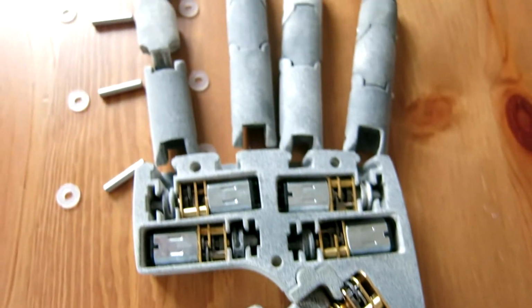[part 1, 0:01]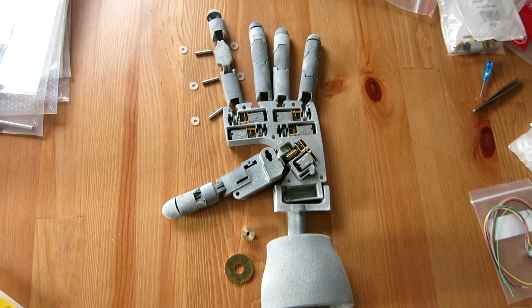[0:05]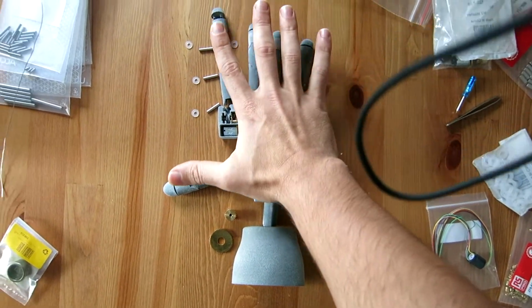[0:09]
For the past 9 months, outside of work in my free time, I've been designing a bionic hand. I've made some pretty good progress with it and wanted to share where I'm at and also give a bit of background behind this project.
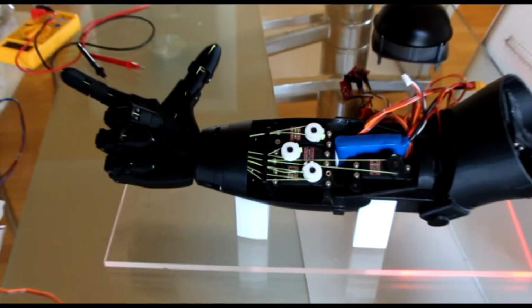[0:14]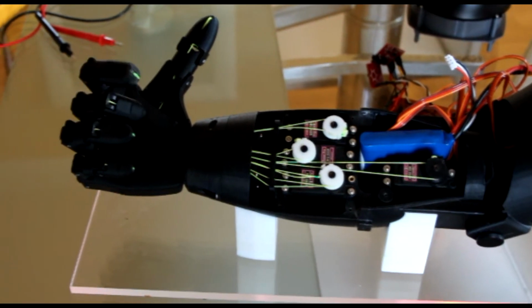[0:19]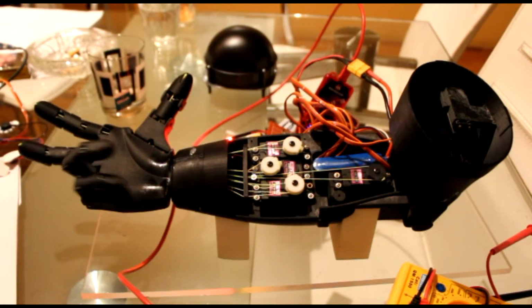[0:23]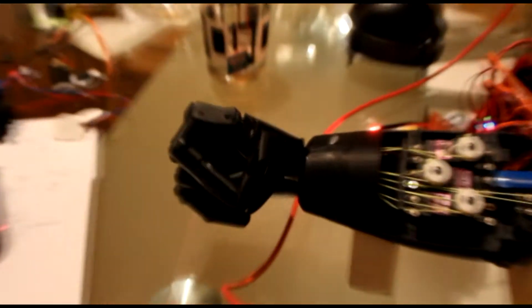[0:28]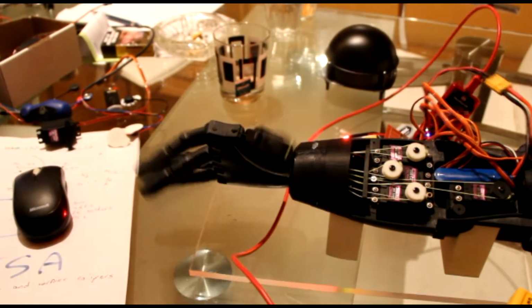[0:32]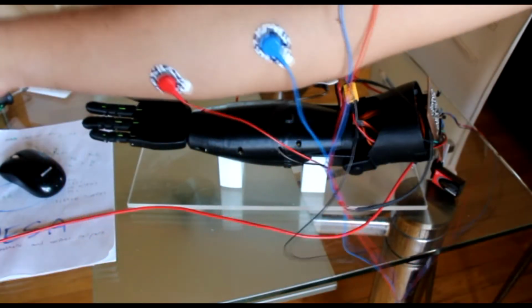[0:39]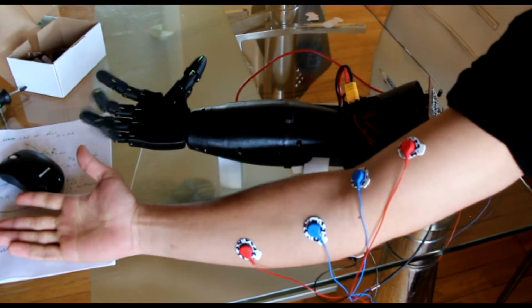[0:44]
Way back in 2014, I designed and built a 3D printed bionic hand for my final year of university. I learned a lot doing this project, especially about mechanical design. And as you can see, each finger was actuated by a motor in the forearm. The wrist could rotate and the elbow could rotate, giving a total of 7 degrees of freedom. I even used EMG sensors to use my muscles to control the movement of the bionic hand. And this is typically how an amputee may control a bionic hand they're fitted with.
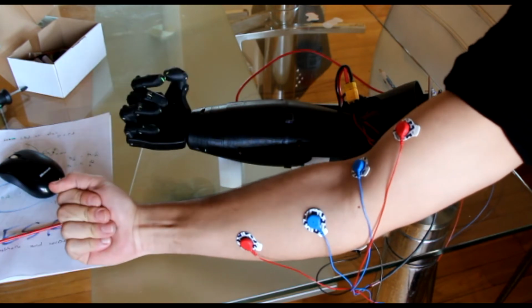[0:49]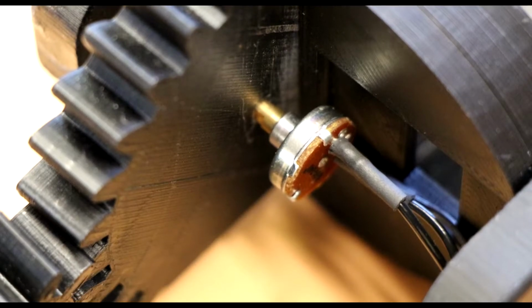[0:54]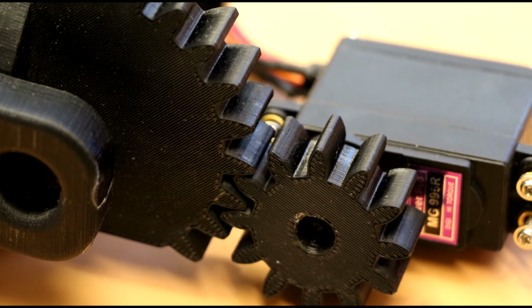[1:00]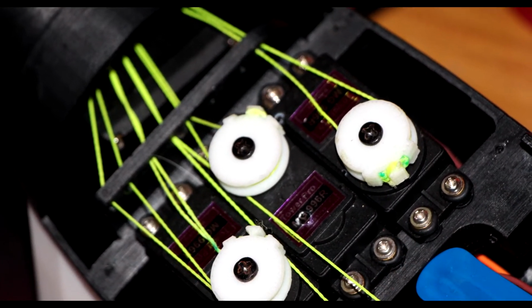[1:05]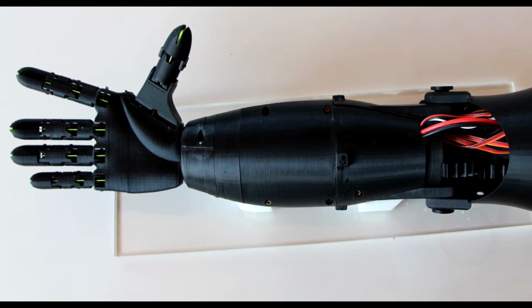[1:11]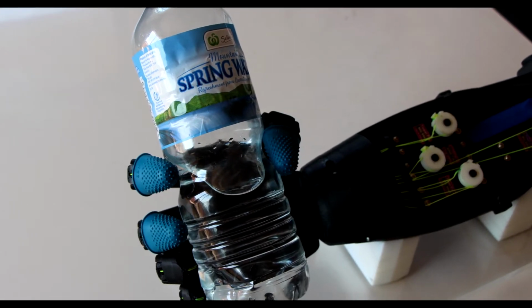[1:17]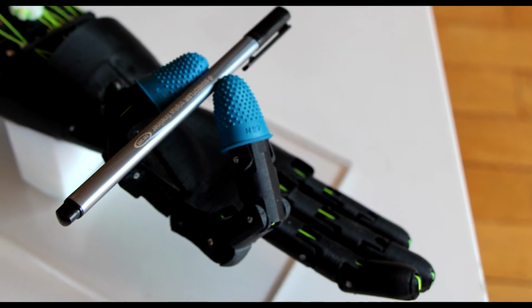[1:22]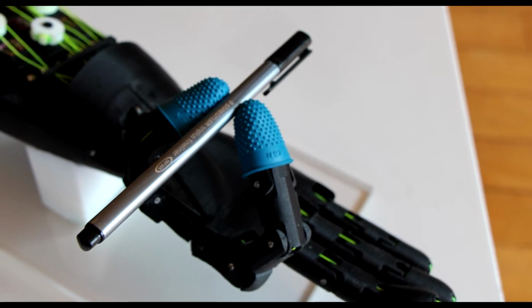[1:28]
Even though the design came out pretty reasonable, it had a few issues that prevented it from being a good bionic arm to attach to an amputee. The first one was that a lot of the components were 3D printed on an FDM printer, and because of the layering, they were quite weak, so I was fearful that an amputee would break the arm relatively easily in day-to-day life. The second issue was that the thumb only had 1 degree of freedom, so it could only open and close in one direction and didn't have much mobility. In this image here, you can see the thumb and the index finger holding a pen, but this wouldn't be possible between the thumb and the large finger or ring finger, for example.
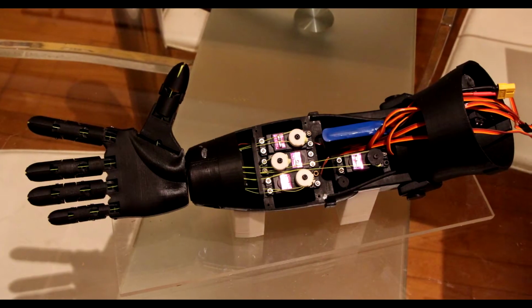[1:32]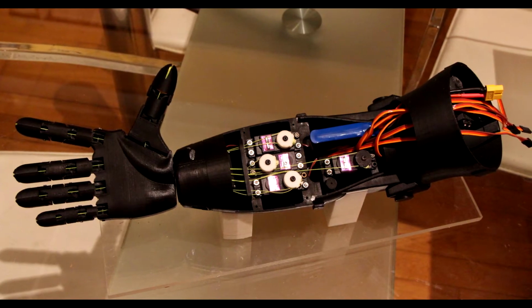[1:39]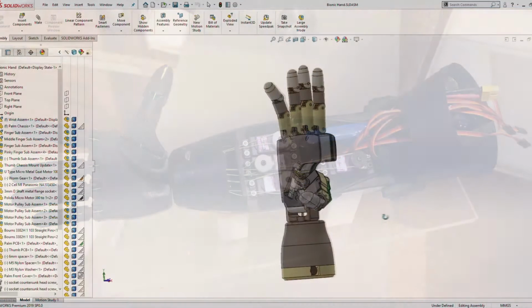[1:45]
The final issue was that the motors were housed inside the forearm, which is actually quite common for a lot of commercially available bionic arms, but it means that a person that's only lost their hand can't really make use of a design like this.
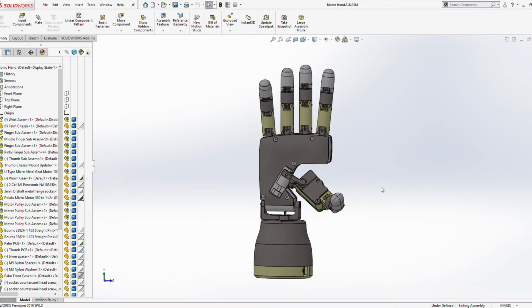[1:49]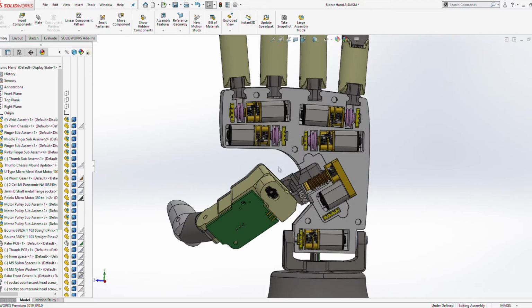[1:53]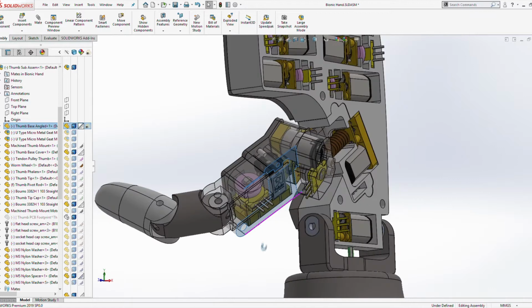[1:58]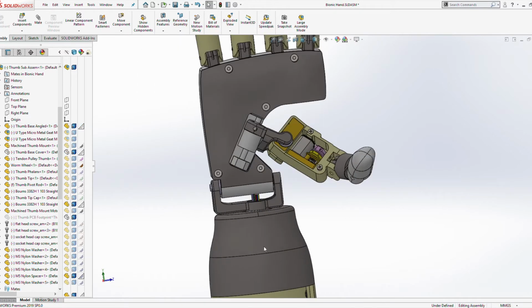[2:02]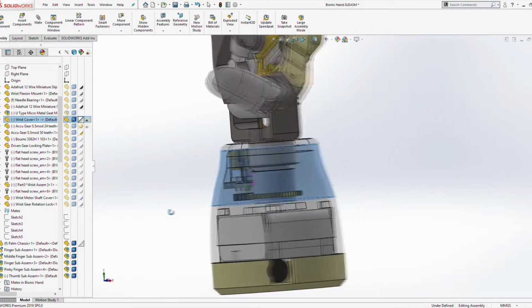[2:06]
So this is where I'm at with the design of the new bionic hand. I want it to be more durable, more compact, and also have more mobility. So I'm planning on using micro miniature motors in the palm and the thumb base. And the thumb will have 3 degrees of freedom. I'm also using a motor in the wrist, and the wrist will be able to rotate and flex.
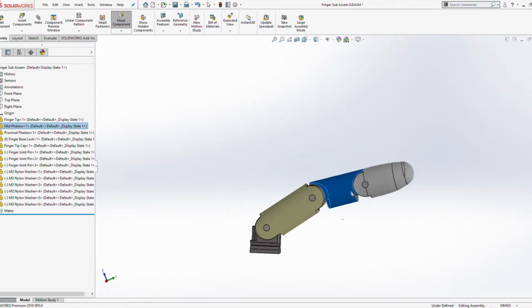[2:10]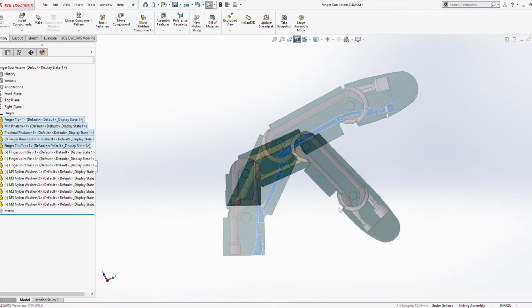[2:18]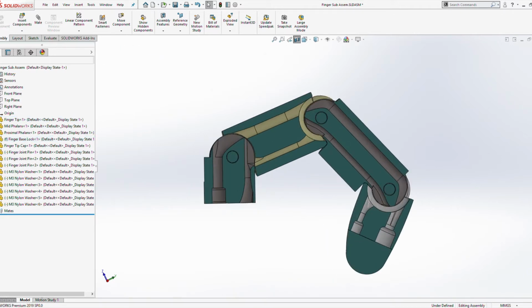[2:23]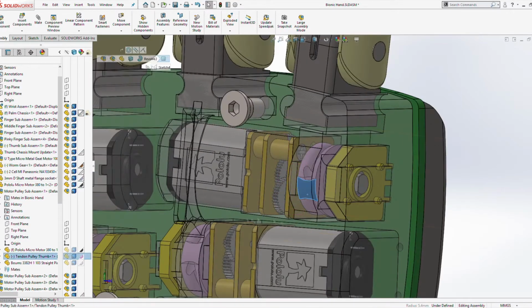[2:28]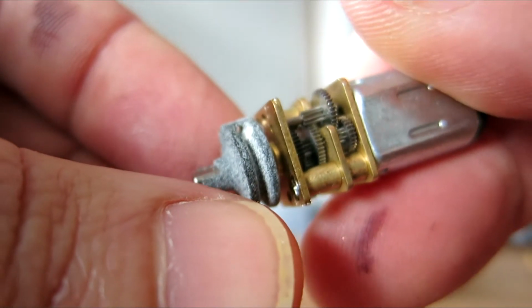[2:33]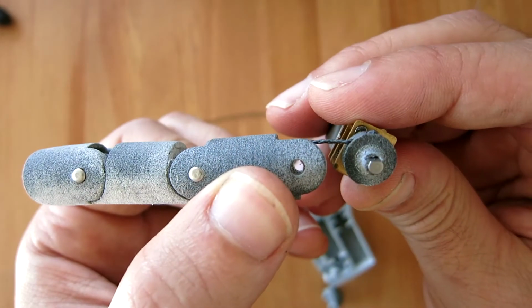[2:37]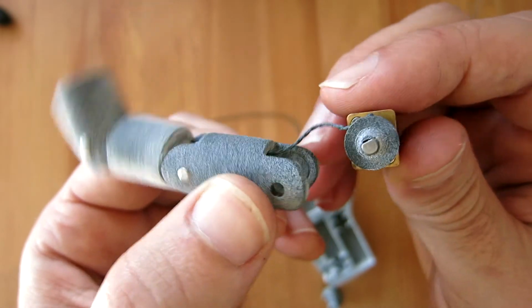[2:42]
The fingers will be 3 joint linkage systems, and I'm still going to use tendon driven systems. So I'm going to have a tendon passing through a channel inside the finger. And when a motor tensions that, it's going to close or flex the finger. And that flexion will be driven by pulleys, which will be attached to the motors in the palm. So this is one of the 3D printed pulleys I got. These are actually 3D printed on an SLS powder printer, which has many benefits over an FDM printer. But I think I'll talk about that in an upcoming video.
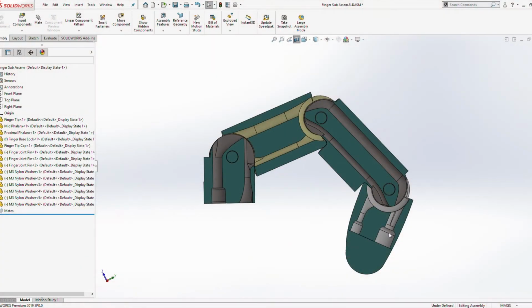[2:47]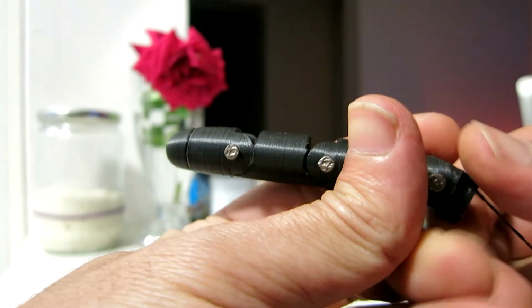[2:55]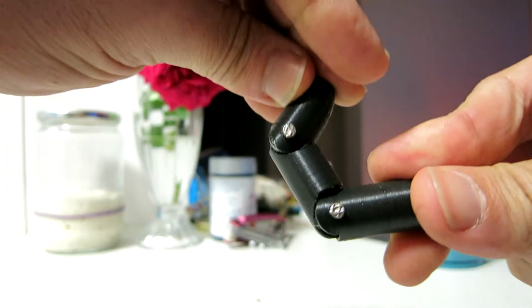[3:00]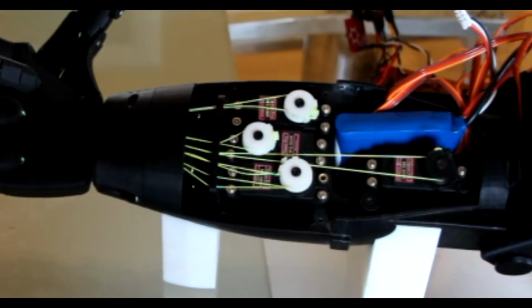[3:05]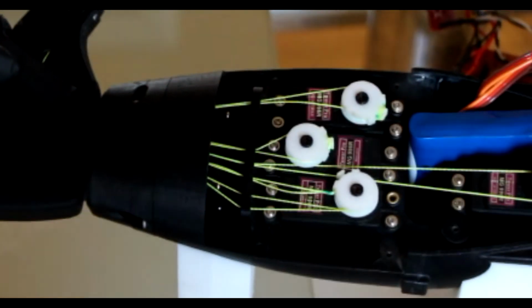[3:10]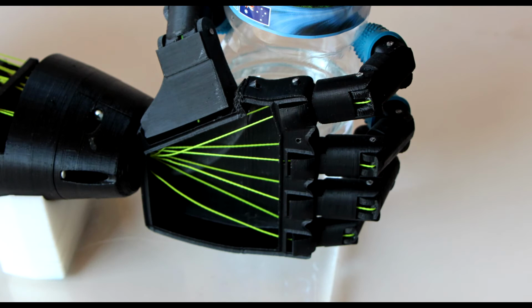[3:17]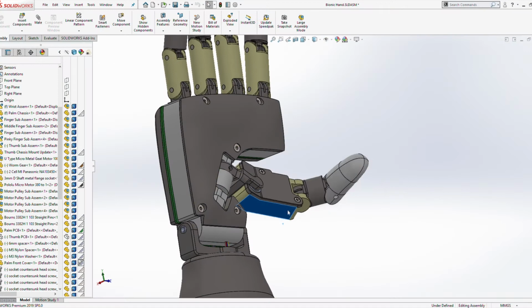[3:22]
Just as importantly, the finger will return to its extended position by an elastic in the back channel of the finger. So the motor can close the finger, and when the motor is powered off, the finger will snap back to its extended position. So I think this actually has a lot of benefits, and it's not something I did in my previous design. In the previous design, I actually had a loop, so a tendon loop. So when the finger was closed or opened, one of the tendons was being tensioned and one was being released.
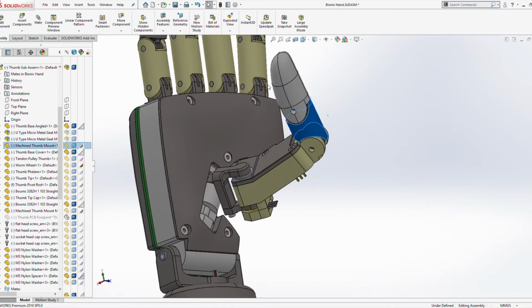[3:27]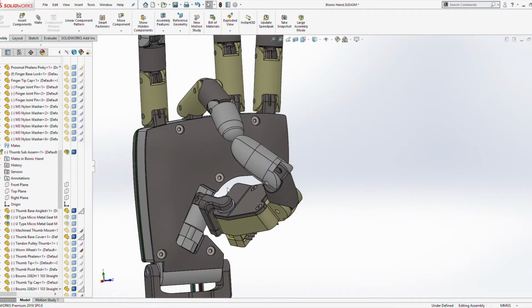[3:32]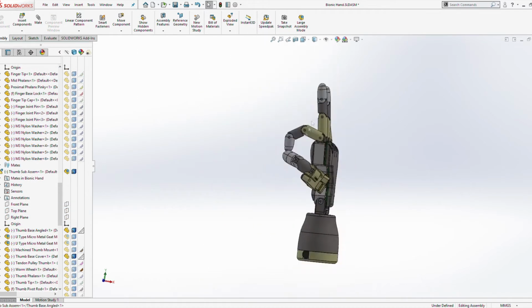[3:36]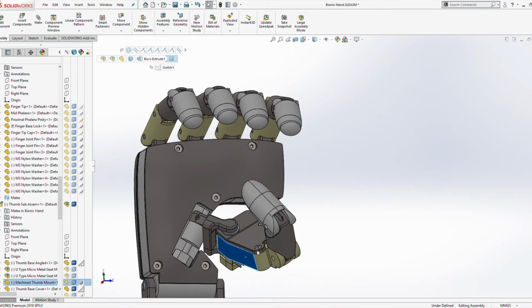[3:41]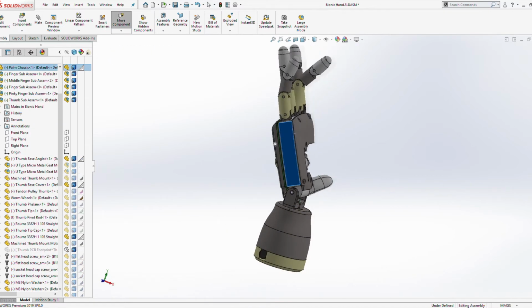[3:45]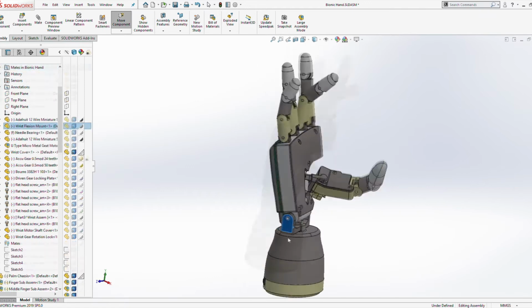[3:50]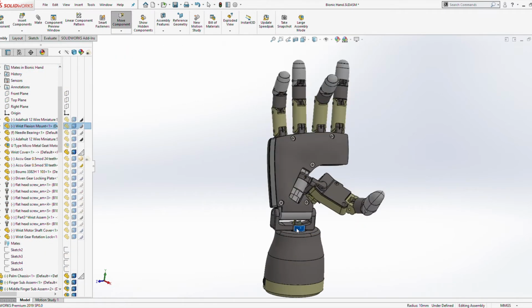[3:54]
With the thumb, I wanted to give it as much mobility as possible. At a bare minimum, I wanted the thumb to be able to maneuver so that it could touch each finger individually. This kind of mobility is super important to complete complex and fine tasks naturally. And of course, the hand will be able to completely grip some kind of round object. The wrist will also be able to flex back and forth, and it'll also be able to rotate, which isn't common in commercial prosthetic arms.
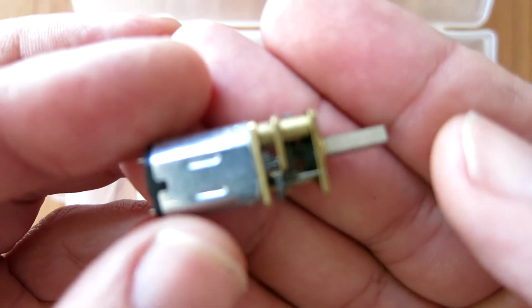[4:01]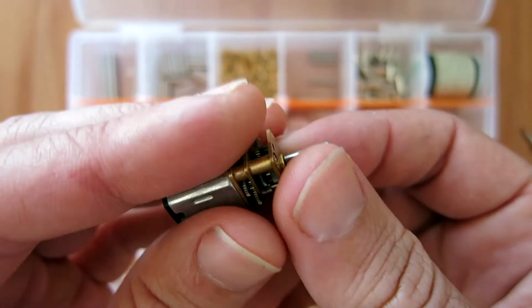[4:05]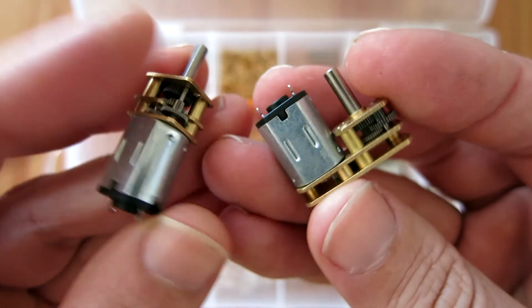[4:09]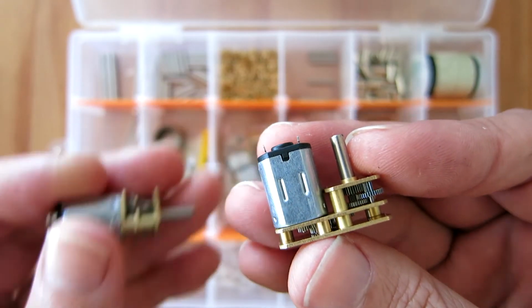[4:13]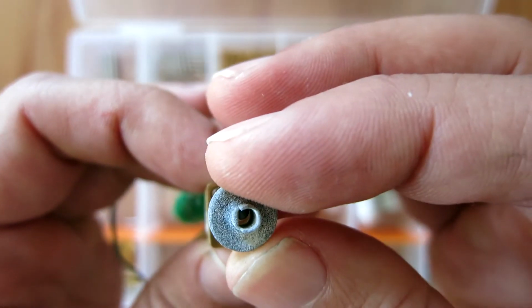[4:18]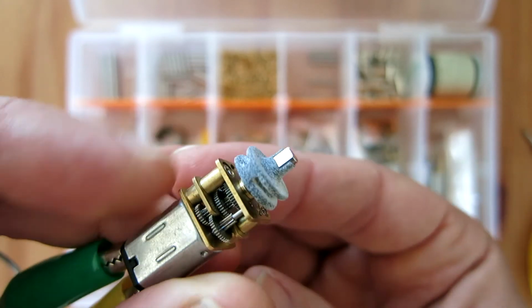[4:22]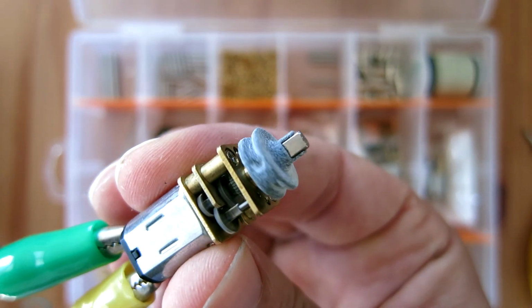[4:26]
So at the moment, I have most of my off-the-shelf components purchased to build this, including these micro metal gear motors. I have two types. I have a straight type and a U configuration type. In an upcoming video, I'll discuss why I needed these two different styles. And this is just showing the SLS printed pulley on the motor in action. I'll also discuss some of the benefits of SLS printing and why it's important in the future.
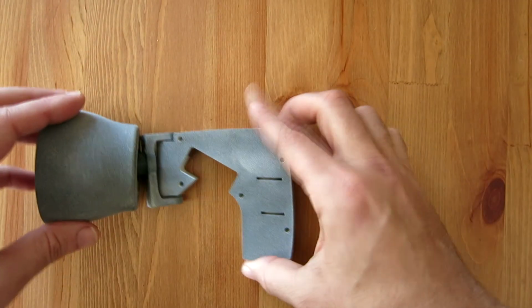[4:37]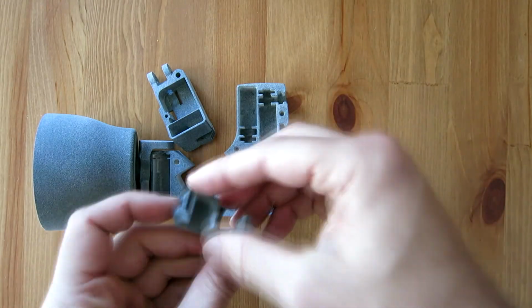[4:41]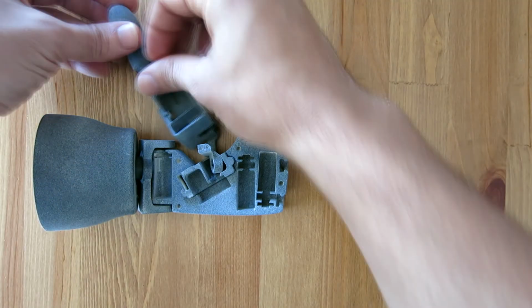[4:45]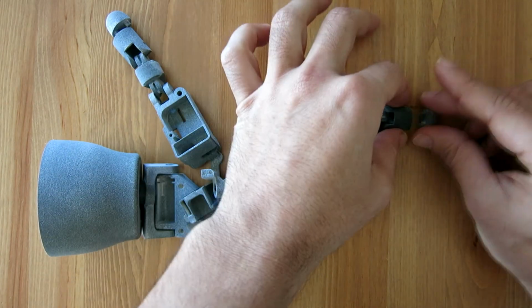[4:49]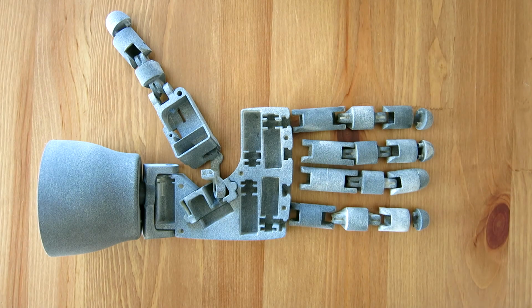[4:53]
And the next step is to begin assembling this unit. I think what I plan to do is assemble and test in 4 or 5 different sections. And I'll make videos discussing the design and potential issues as they come up. And after that, I'll discuss the electronics and my plans for the software and control.
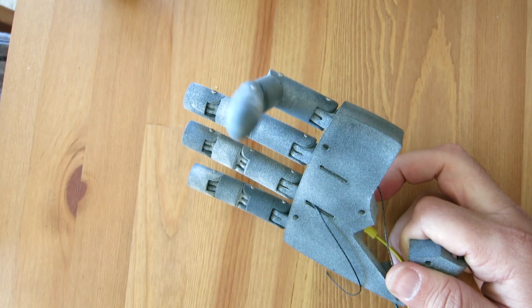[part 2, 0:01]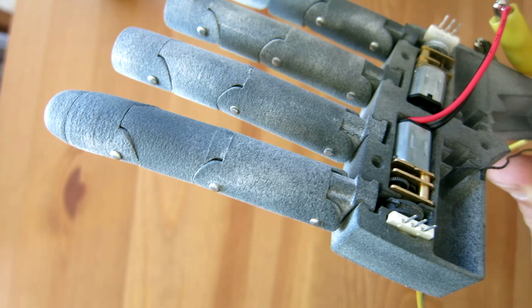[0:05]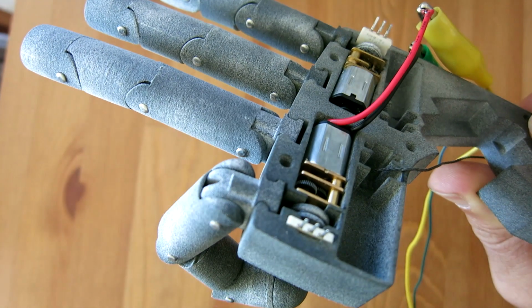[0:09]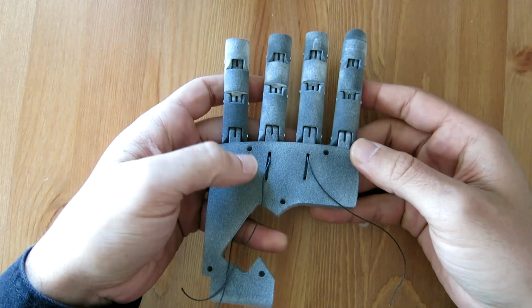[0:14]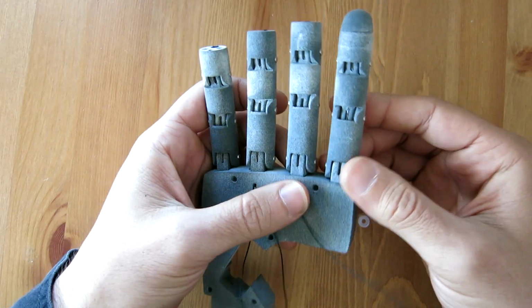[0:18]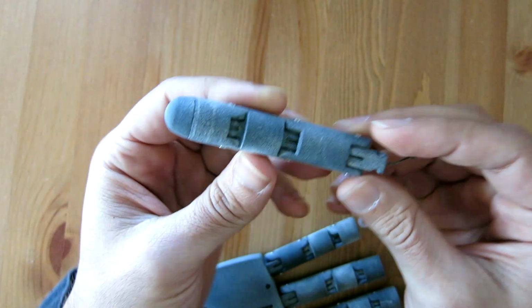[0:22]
What you just saw there was some clips of me testing the fingers of this compact bionic hand I'm working on. So I'll go through the design so far and discuss things as they arise.
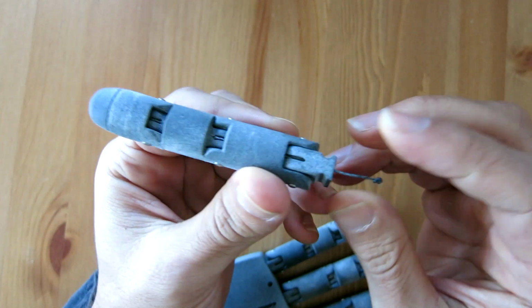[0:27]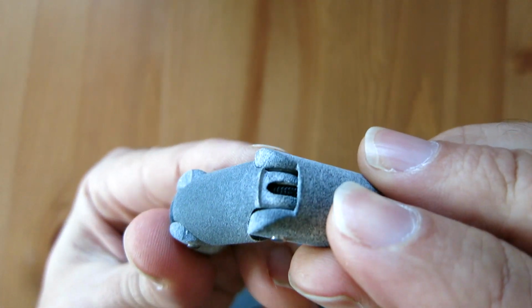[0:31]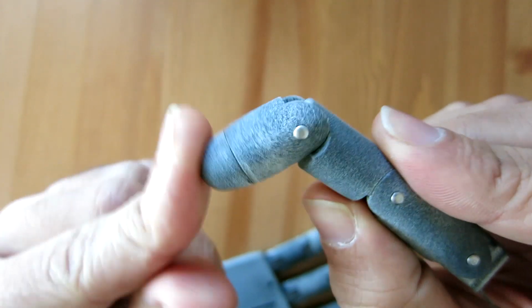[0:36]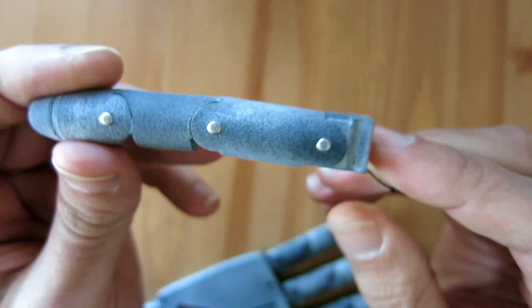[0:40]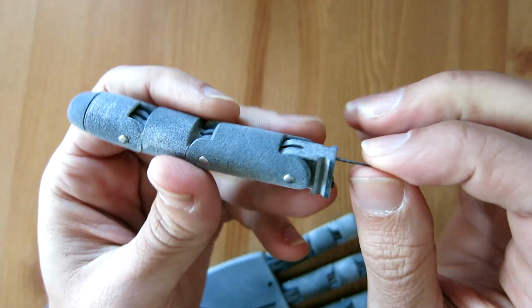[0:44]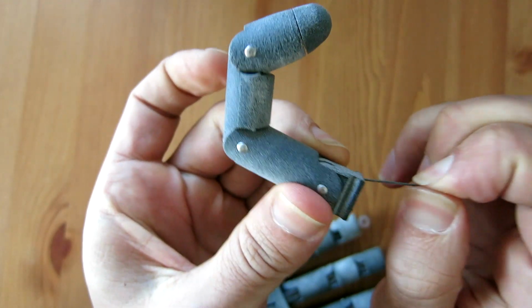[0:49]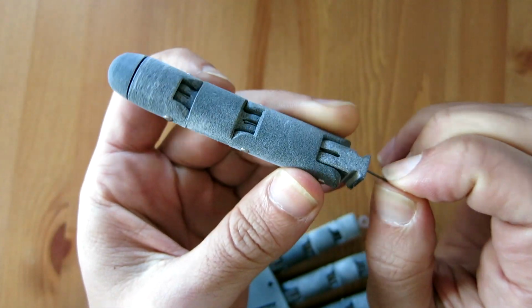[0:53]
So what we're looking at here is a sub-assembly of one of the fingers. It's an artificial tendon-driven unit. In the back there, you can see a little elastic rope. That returns the finger to the extended position when there's no load on it. So if one of the joints is bent and then released, it pops back. And down the front channel of the finger is a small rope, which I'm using as an artificial tendon. So when that's tensioned by either pulling it or a motor, it contracts.
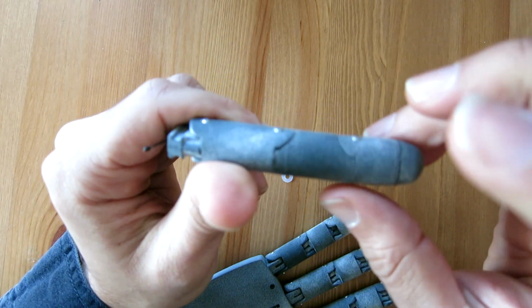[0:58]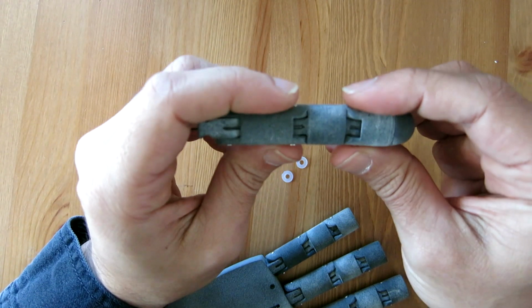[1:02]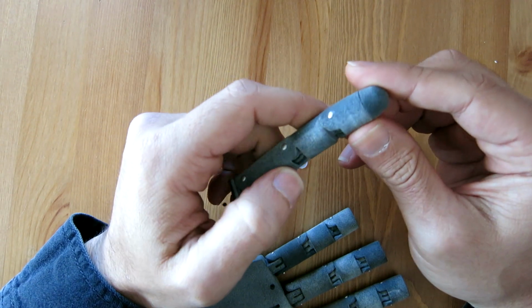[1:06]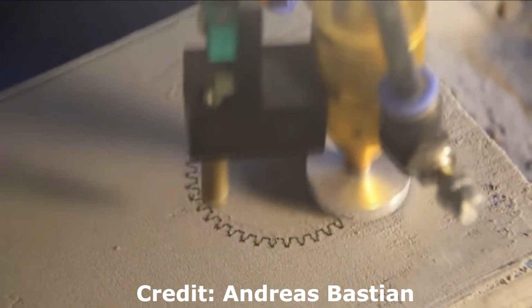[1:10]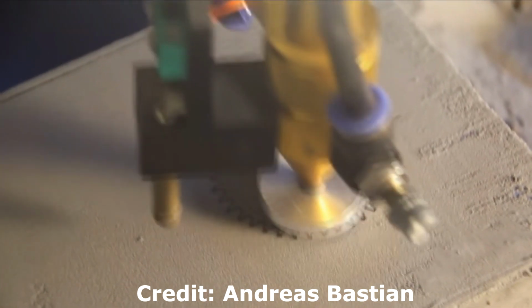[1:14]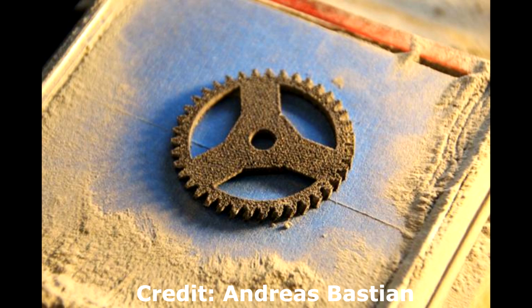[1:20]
So in this design, I've gone for SLS printing. And SLS printing is an advanced form of 3D printing. It actually uses a powder matrix and a laser to sinter together material. So a bit different from standard FDM printing, which extrudes a molten material layer by layer. This still builds layer by layer, but it has some benefits.
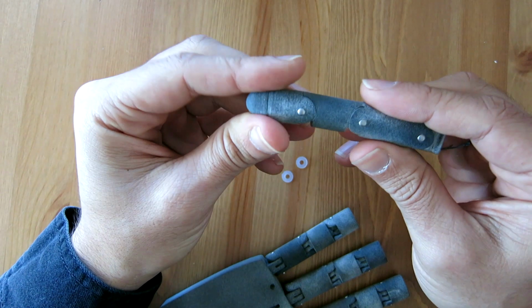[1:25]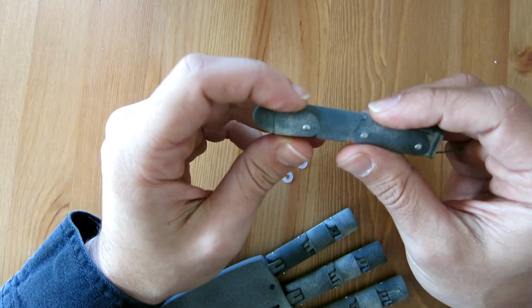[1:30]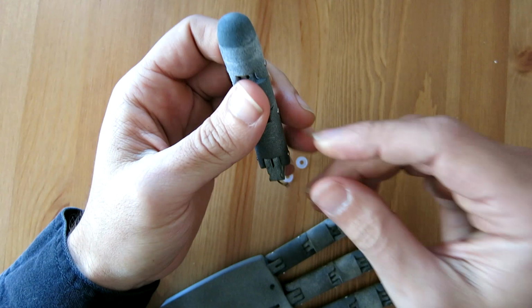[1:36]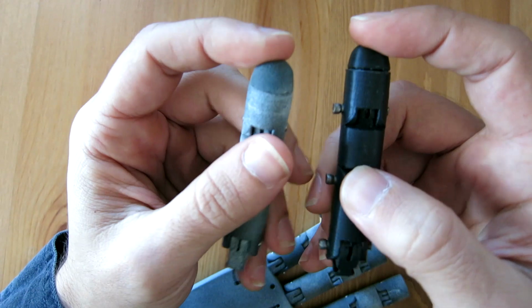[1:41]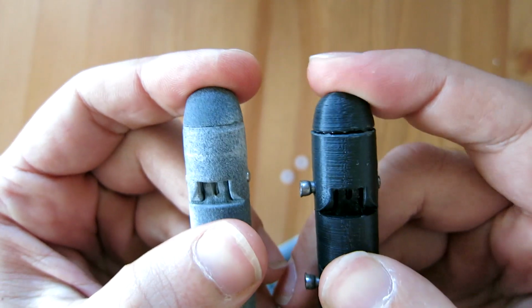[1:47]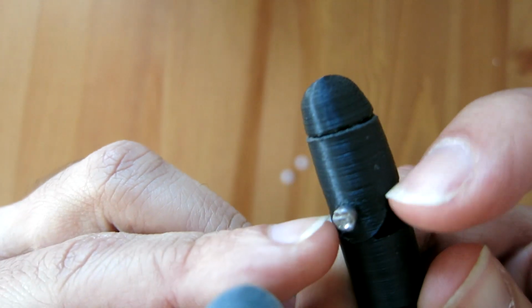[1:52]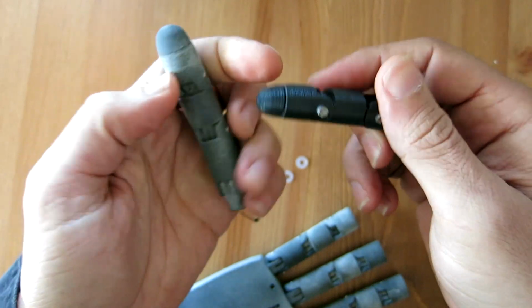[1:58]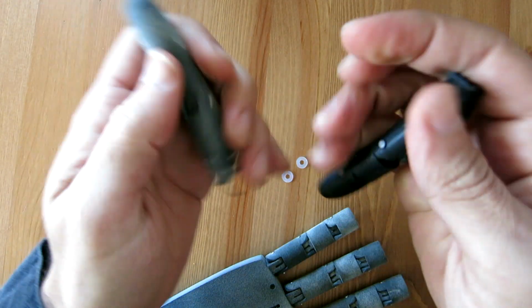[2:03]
So SLS printed parts are more durable generally. They're made out of a nylon base, so they're quite tough. And because there's no support material involved in the process, the quality tends to be much higher. So here I'm just comparing this finger to a previous one that I did FDM print. And you can see the quality at the interface between two parts is a lot better. On the FDM printed part, you can clearly see the lines from the layering process. But in the SLS printed part, it is slightly rough, but the quality feels a lot better than an FDM printed part.
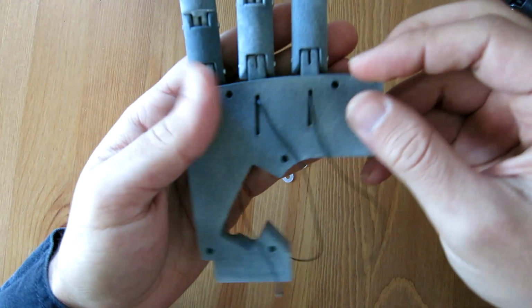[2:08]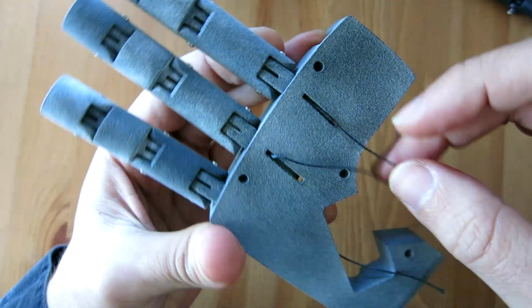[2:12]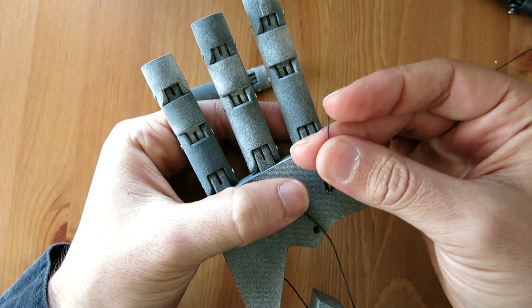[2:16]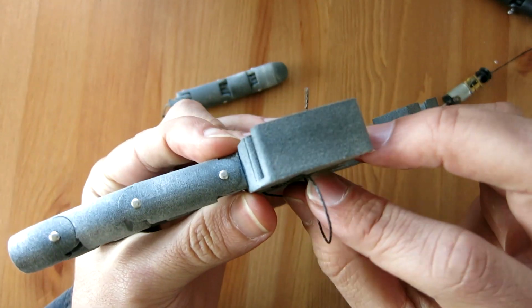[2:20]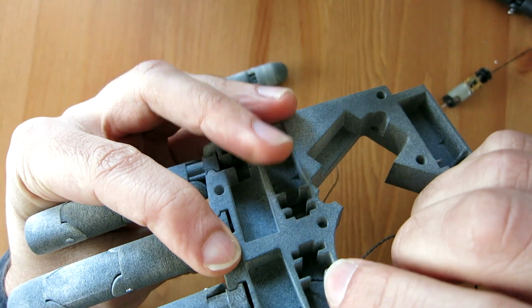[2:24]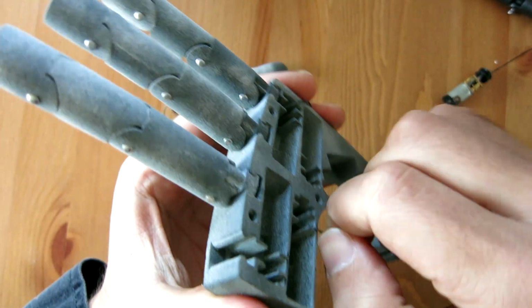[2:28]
Because powder printed parts don't require support material, it allows you to create intricate and fine details and features that still come out neat and smooth. So specifically for the channels of these tendons, I could be somewhat creative and create intricate paths throughout the finger components and the palm component in order to tension that tendon.
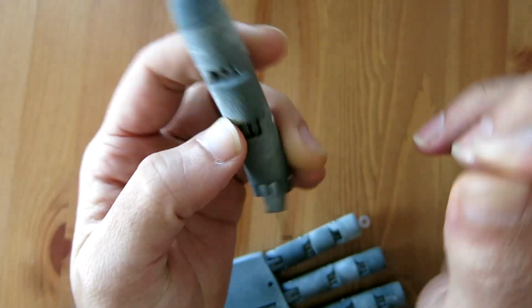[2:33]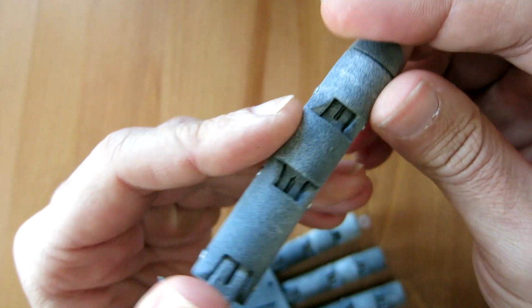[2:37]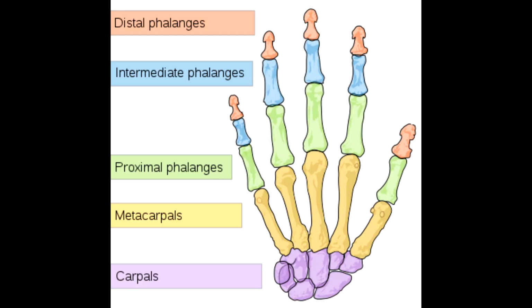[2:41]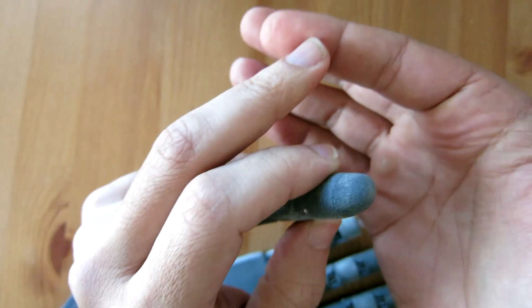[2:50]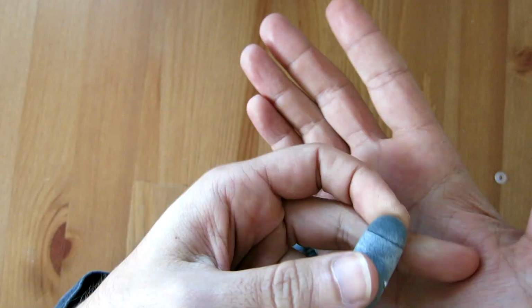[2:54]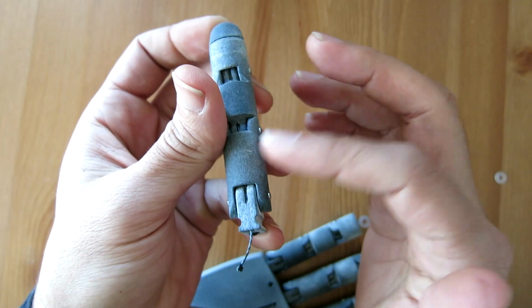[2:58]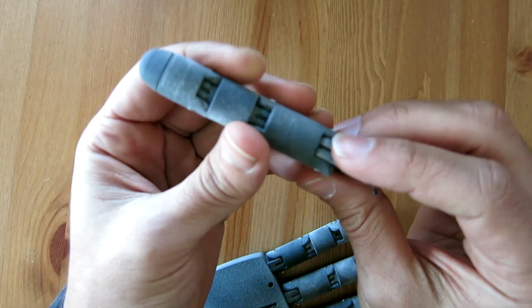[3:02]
So the finger consists of three primary components. In the biological human hand, the bones are called phalanxes. The one furthest away from the heart is called the distal phalanx, and the one closest to the heart is the proximal phalanx. So I'm using somewhat of an exoskeleton design. The rigid components are exposed to the outside world in this case. But I'm still mimicking the biology somewhat, especially with this tendon-driven system.
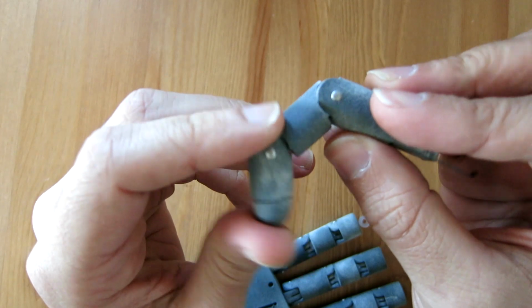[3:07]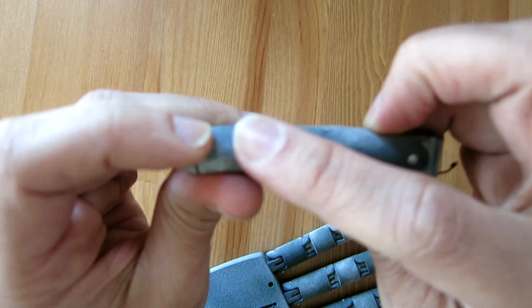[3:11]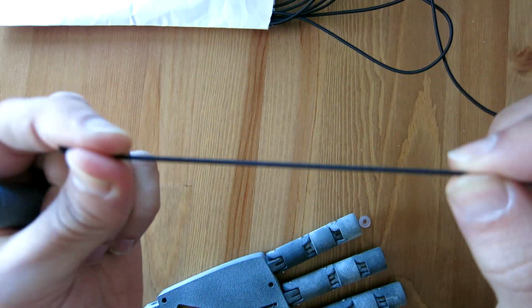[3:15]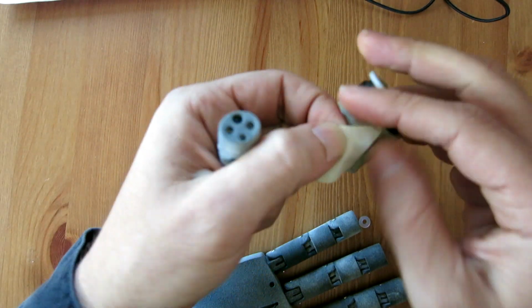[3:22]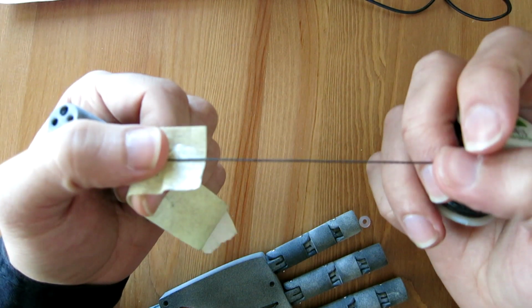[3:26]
In the real human hand, we actually have multiple tendons, one going to each phalanx. But for simplicity, I'm just starting with 1 degree of freedom with regards to flexion. This is the elastic that's returning the finger to its extended position. And this is just that thin synthetic rope or cable that I'm using as the artificial tendon.
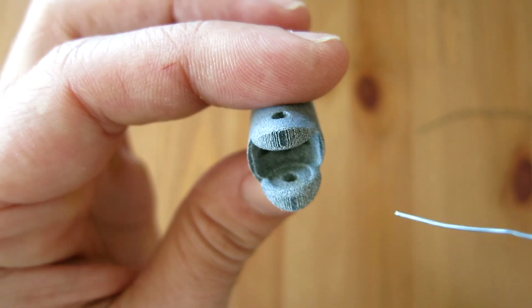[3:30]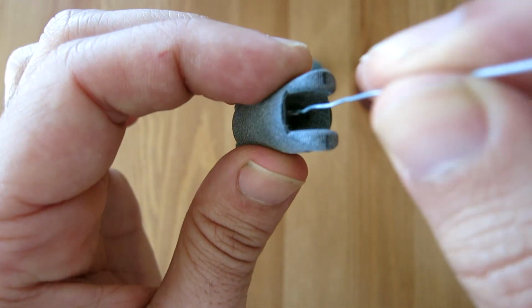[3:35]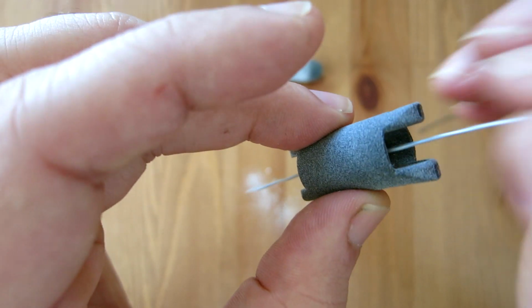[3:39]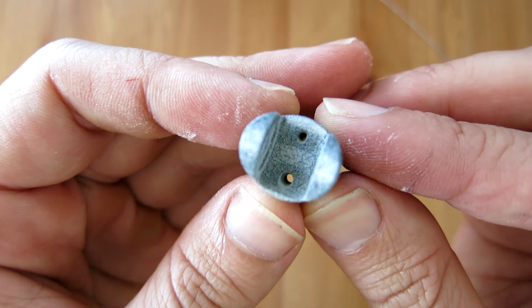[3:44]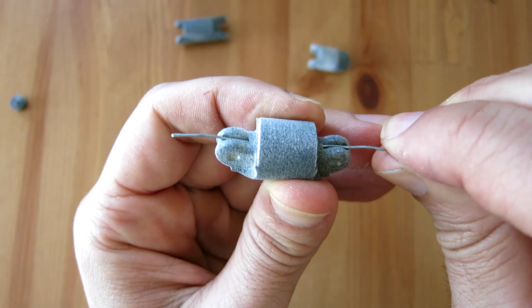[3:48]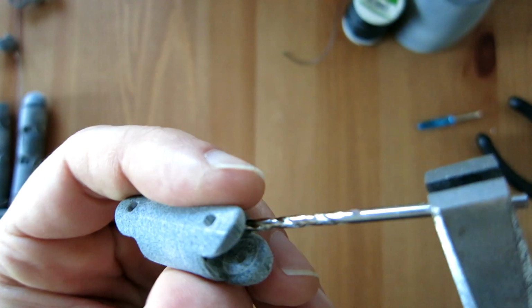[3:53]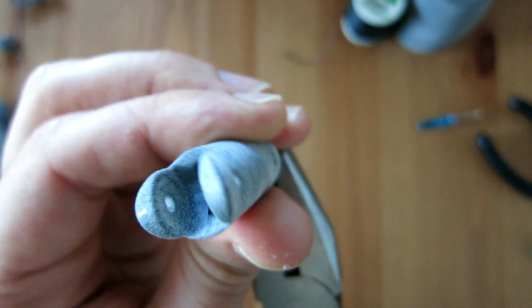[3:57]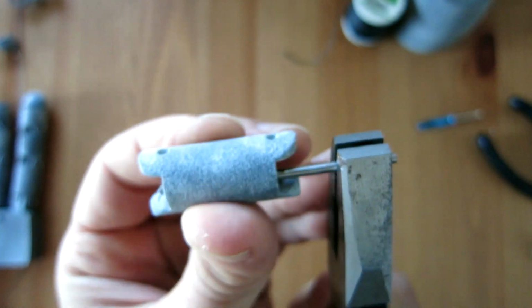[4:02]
When these parts first come out of an SLS printer, and by the way, I don't own an SLS printer myself, I'm paying for these to be printed externally, some features can still be filled with unfused powder. Because the channels down the interior of these parts are quite small, it retains some of the powder. So here I'm just using a wire to clear out some of that powder. I actually later found it was better to just use a drill bit to clear out the powder, and it also gave a consistent diameter through the whole channel.
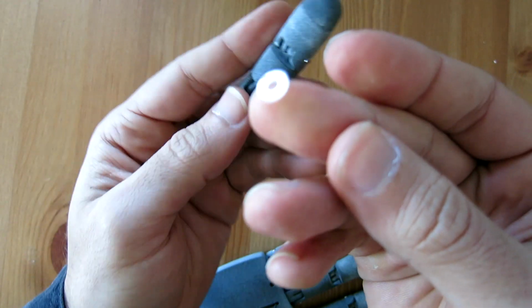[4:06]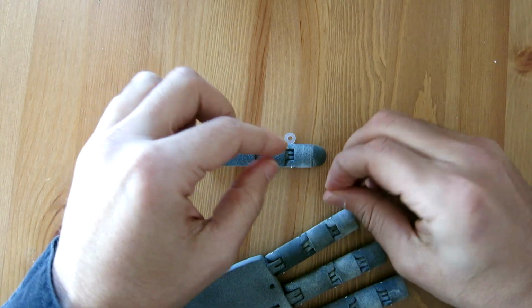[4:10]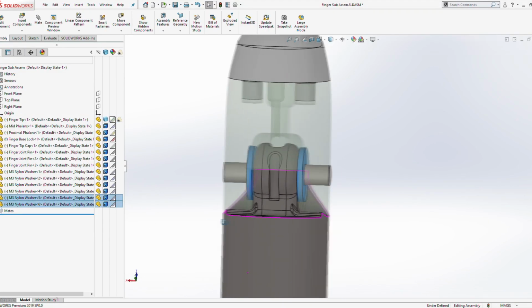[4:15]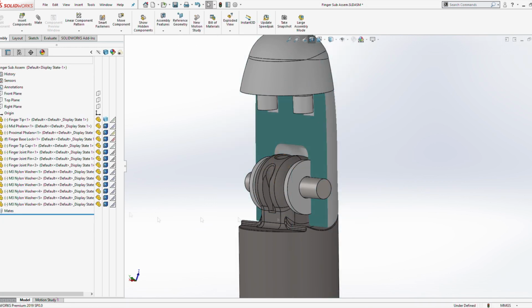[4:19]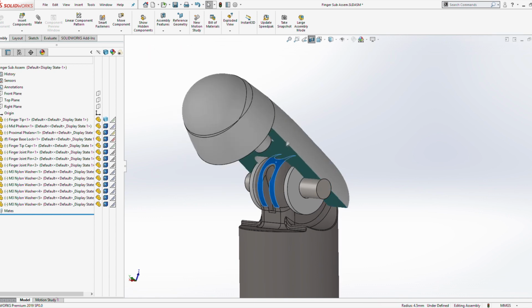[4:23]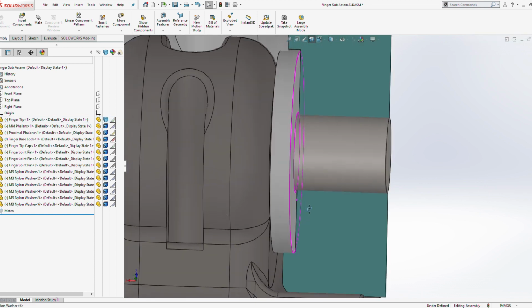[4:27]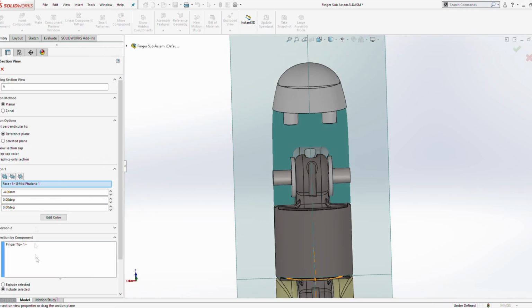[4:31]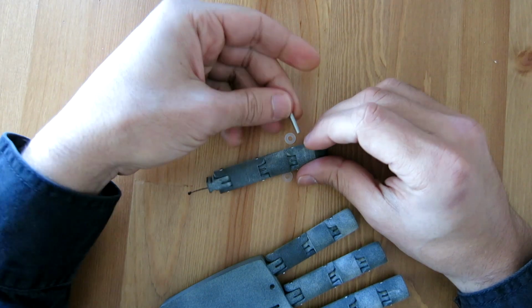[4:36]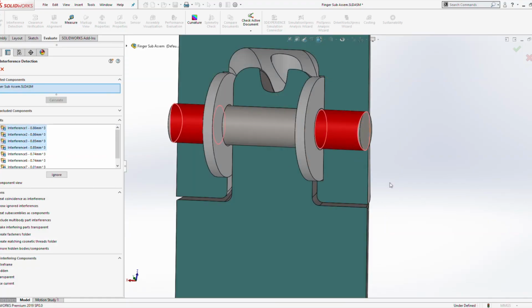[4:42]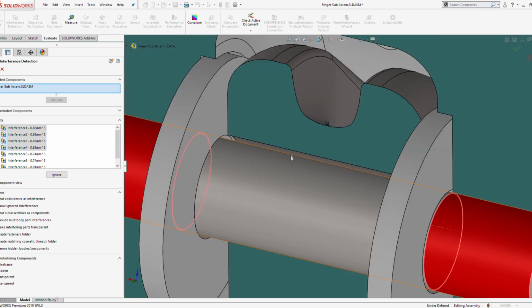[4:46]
Inside the finger joints, at the interface between the powder printed parts, I'm using some nylon washers, and I'm placing them in between the sliding surfaces. I'm doing this to decrease the friction and also reduce the risk of the parts wearing down over time. Even though they're the same material, the powder printed parts come out a little bit rough and the nylon washers are a lot smoother. And I'm also using a metal pin straight through the joint just to hold everything together. I've designed it so the metal pin is an interference fit on the outer sections, as seen here, highlighted in red. And on the inside, it's a loose clearance fit.
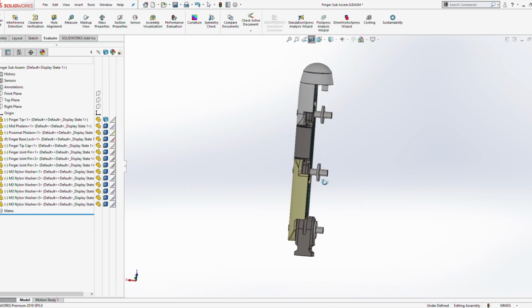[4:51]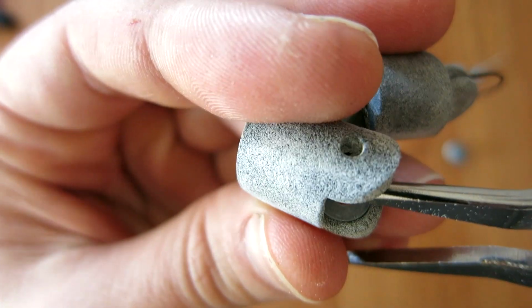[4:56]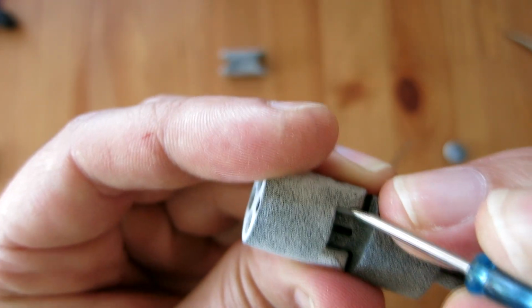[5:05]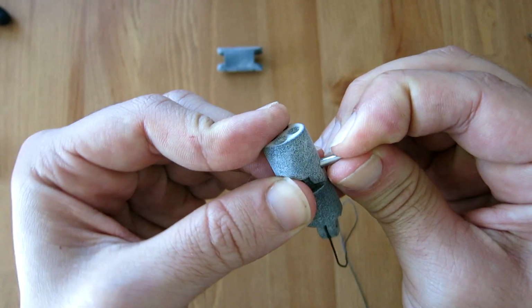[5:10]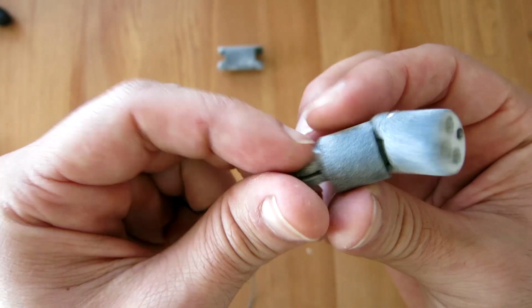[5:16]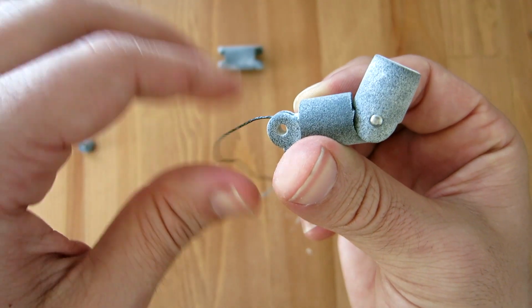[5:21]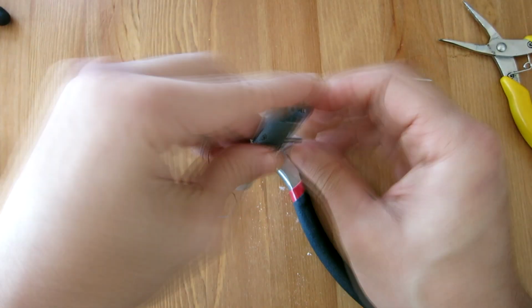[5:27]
Inserting these nylon washers into the parts first requires putting one of them in the corresponding socket in one piece, inserting the other corresponding piece, and then the next one I push in the gap between them and use a tool to put it in place. Finally, I use a metal pin to insert into the hole and with a little bit of pressing force, push that pin through. And this gives the first actuated joint of the finger. And I repeat this process for each joint in the finger using two washers and one pin per joint.
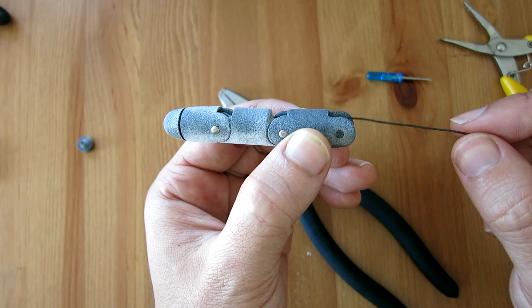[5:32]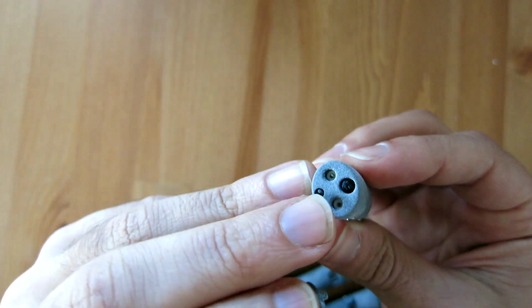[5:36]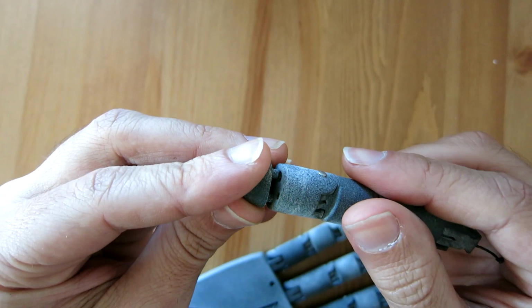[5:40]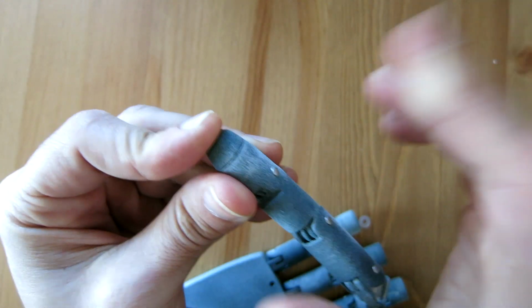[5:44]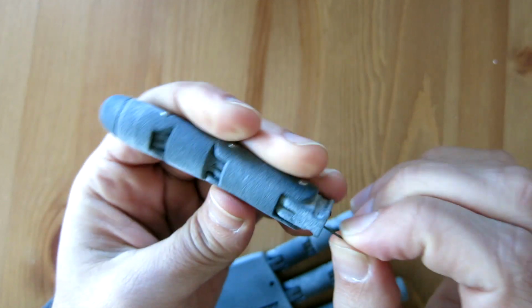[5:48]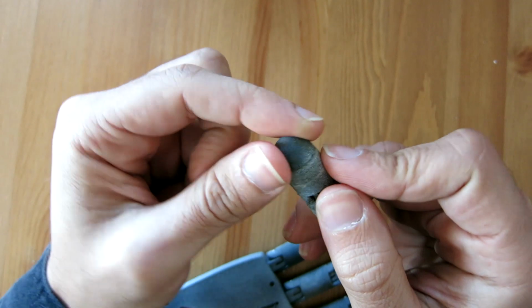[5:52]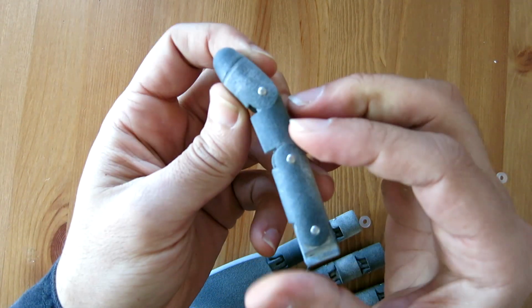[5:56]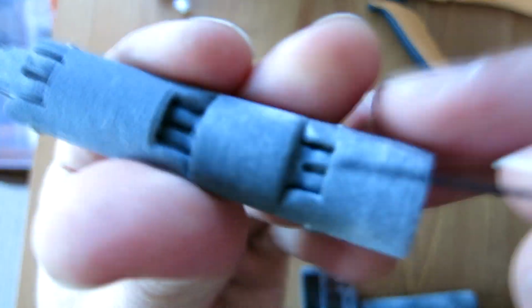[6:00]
I also have a small fingertip cap piece. In the distal phalanx part, I have two cylinders which house knots in the tendon and the elastic to prevent them from slipping through their channels. So the fingertip cap part just covers them up and also finishes off the end of the finger. And I'm thinking of making this a rubber piece in the future for more grip and compliance.
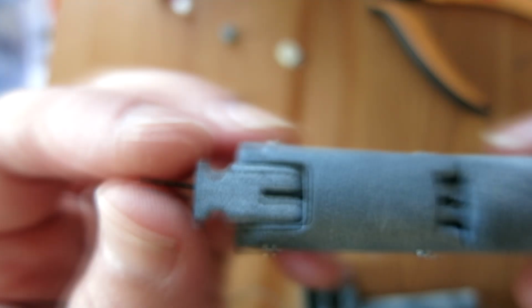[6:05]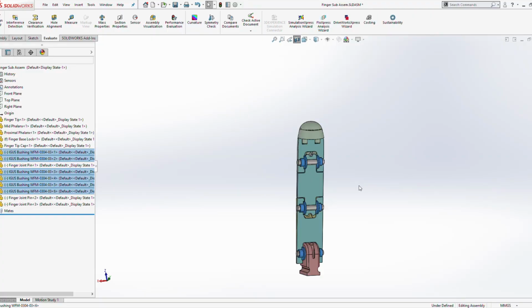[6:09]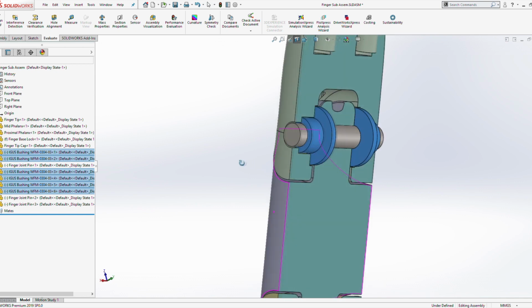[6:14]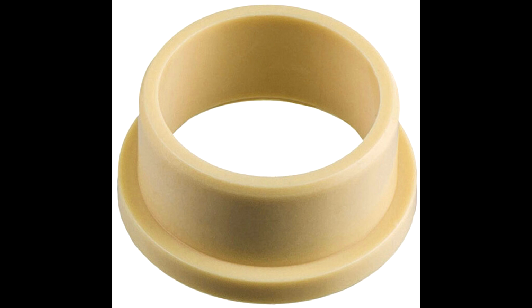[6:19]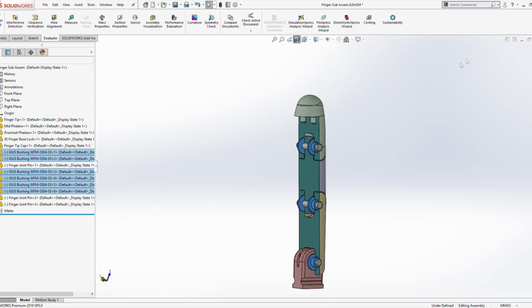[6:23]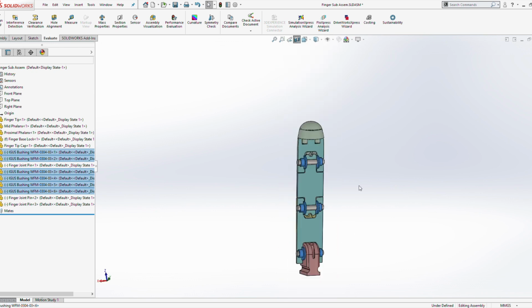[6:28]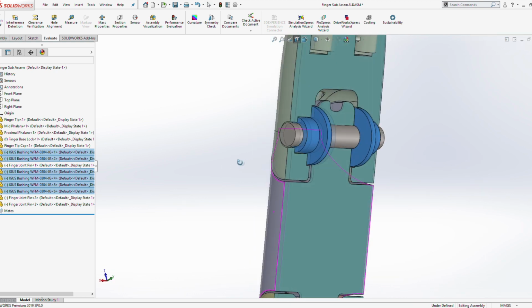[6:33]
I actually found it's a bit easier to insert the rope through all the channels at the end once everything's assembled. And just one last point worth mentioning was that initially I was using igus bushings instead of the nylon washers, and they have the benefit that they're flanged and are designed exactly for this application, but they're quite expensive. They're about $4 to $5 each, and I'm using 20 to 30 in my design, so that's already more than $100 just on bushings, whereas the washers I can get a pack of 50 for a couple dollars.
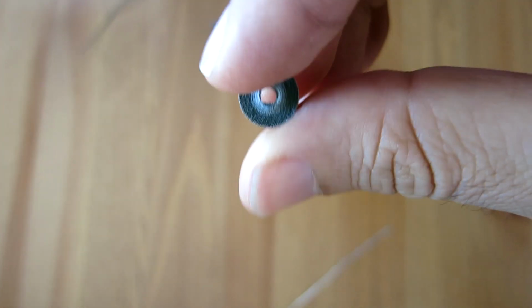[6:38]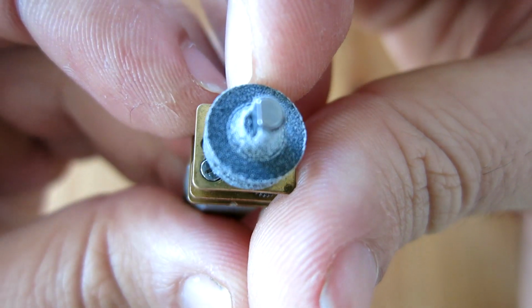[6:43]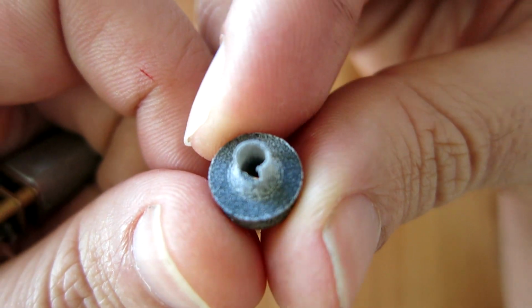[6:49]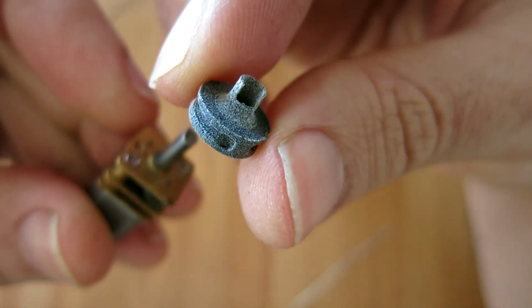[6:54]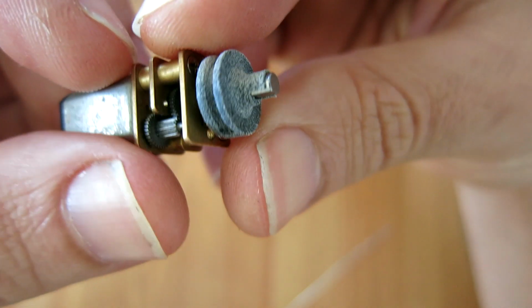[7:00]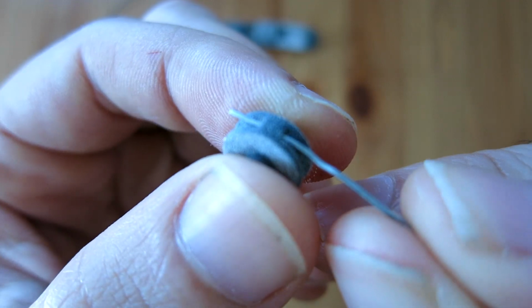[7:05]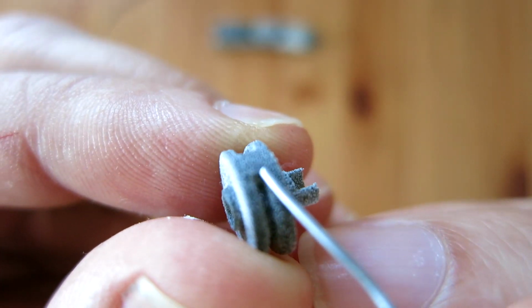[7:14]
In order to tension the artificial tendons, I'm using micro gear motors in the palm. So when the motor shaft rotates, the pulley tugs on the tendon and closes the finger. There's a little bit to say about these little pulleys, and I've already run into some problems, which I'll discuss. Essentially the shafts are D shafts, which just means they have a flat on one side. So I've designed the pulley to have a corresponding D hole for the shaft to fit into. And like the other parts we've seen so far, the powder needs to be cleared out so I have a clear path to put the tendon rope through.
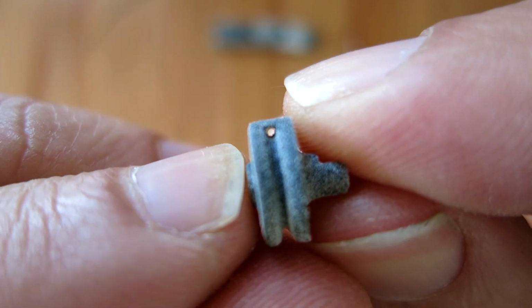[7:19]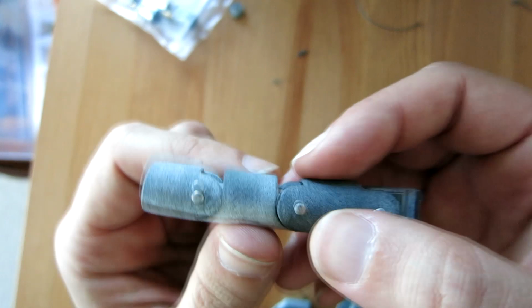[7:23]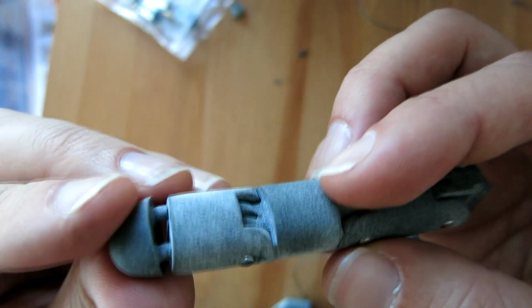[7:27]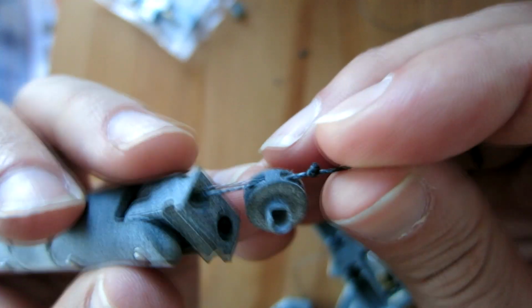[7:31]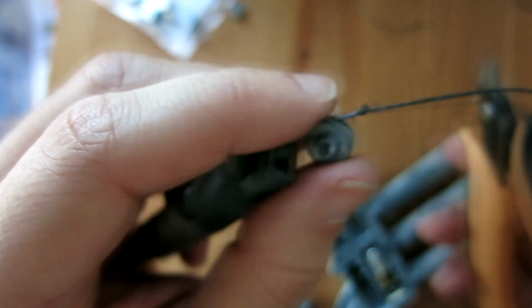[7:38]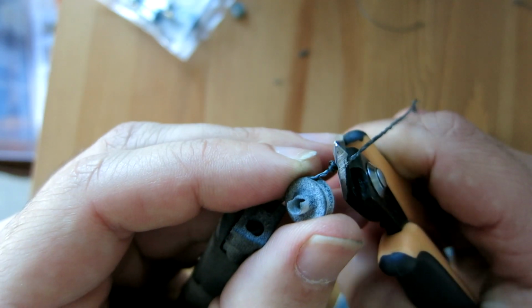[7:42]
So here we can see the completed finger subassembly. It has the elastic running through the back channel and the artificial tendon rope running through the front channel. That tendon also passes through the pulley, and I've tied a knot on the end to prevent it from slipping through. And finally, I just trim off the excess rope.
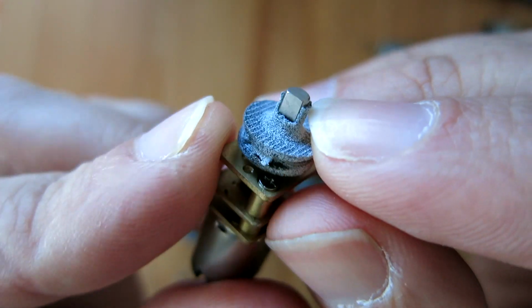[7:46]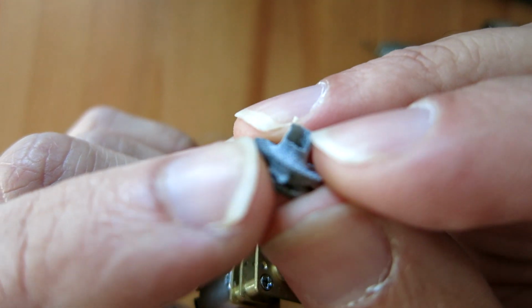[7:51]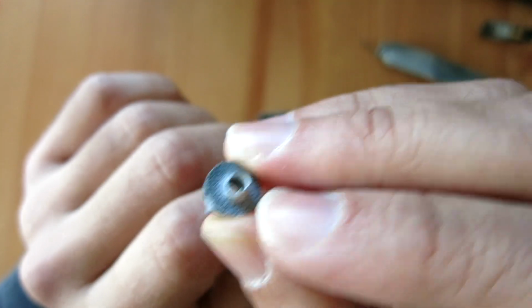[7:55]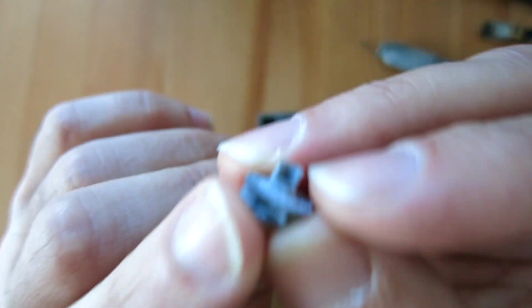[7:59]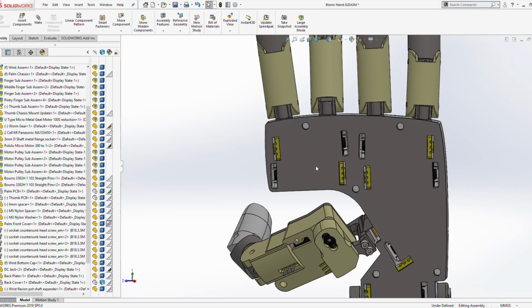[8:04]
You may have noticed there's a small wall protruding from the pulley, and it's actually a 0.5 millimeter thick wall. So this probably wouldn't be possible to print on an FDM printer, and to be honest, it's only barely possible with an SLS powder printer. But there actually is a purpose for this.
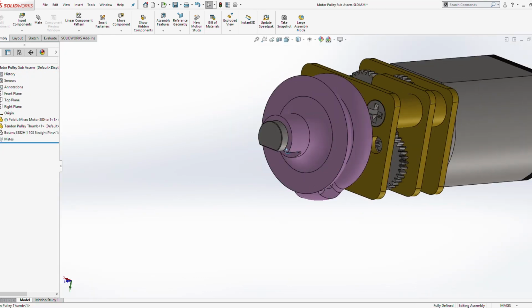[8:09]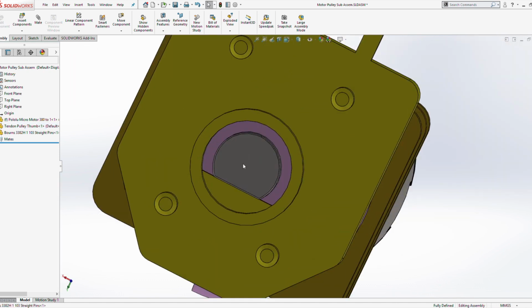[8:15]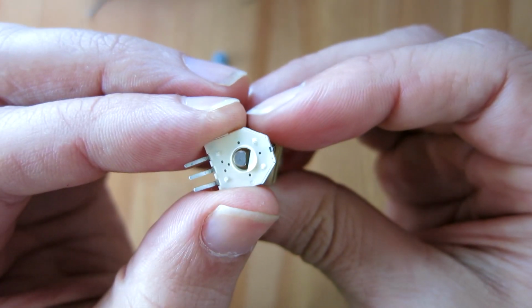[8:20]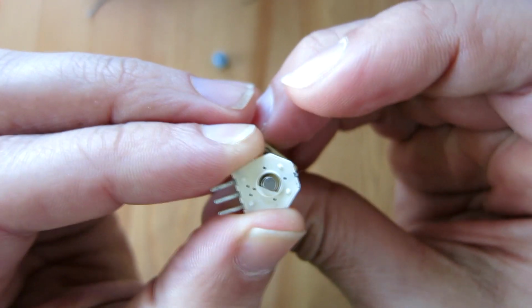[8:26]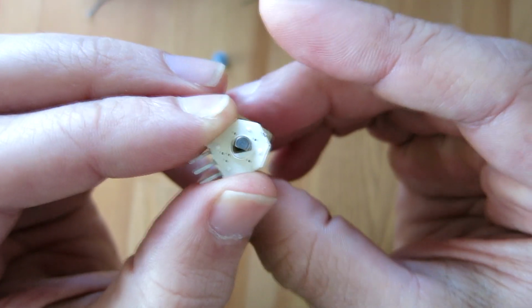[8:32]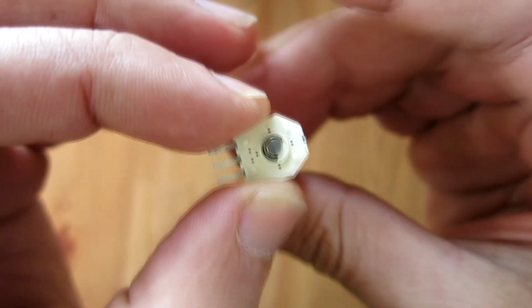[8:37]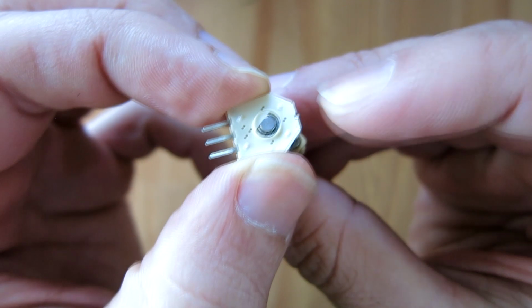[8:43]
Jumping into the CAD, we can see that the motor is in line with the purple pulley, and it's also in line with a sensor. This sensor is a rotary potentiometer, which basically has variable resistance depending on the rotational position it's at. We can see the motor shaft is slightly undersized compared to the hole of the sensor, and it's possible for this shaft to be rotating inside this sensor without actually causing the sensor to rotate. So what I've done is I've added some wall thickness to the pulley part, so it ensures that when the motor rotates, the sensor also rotates, as seen here.
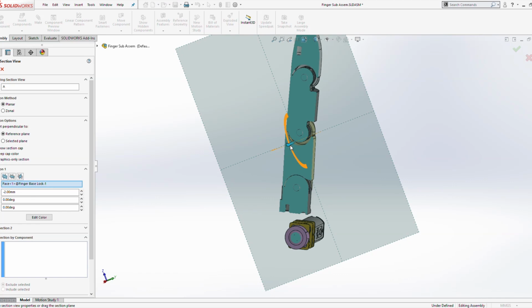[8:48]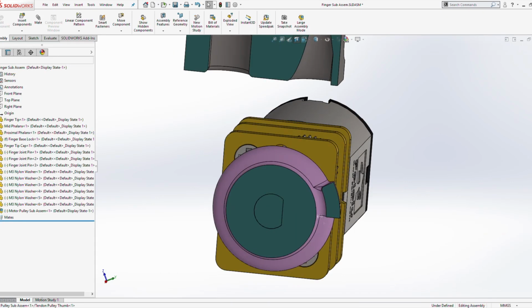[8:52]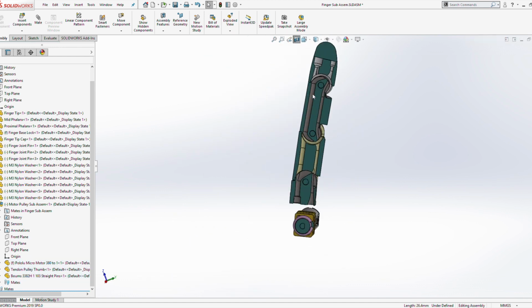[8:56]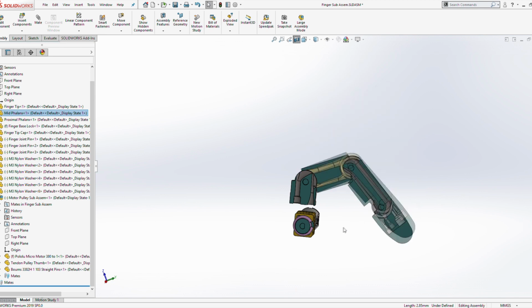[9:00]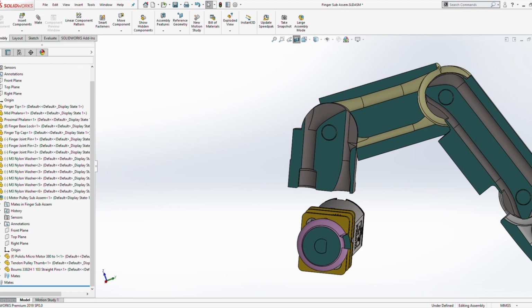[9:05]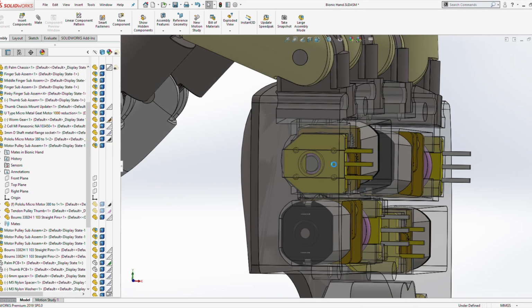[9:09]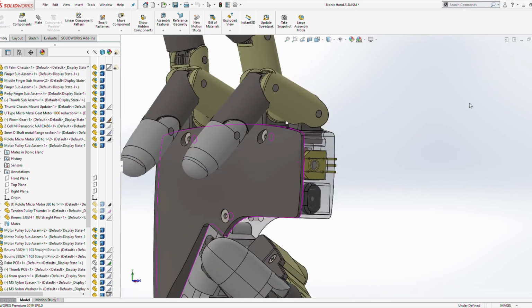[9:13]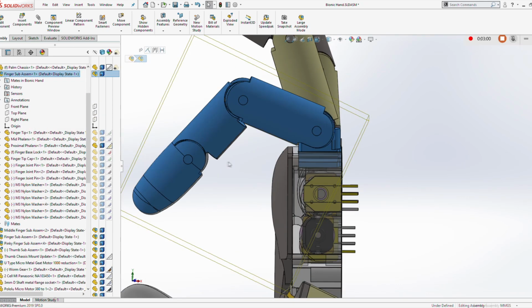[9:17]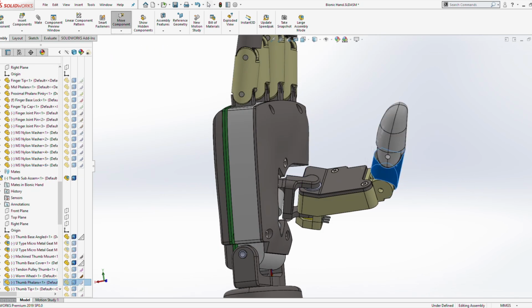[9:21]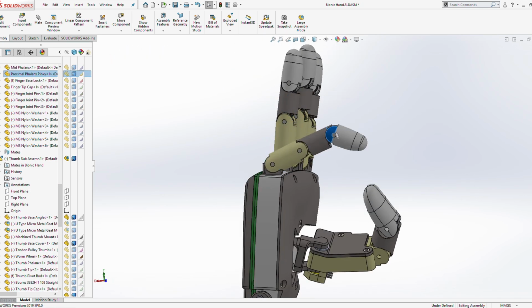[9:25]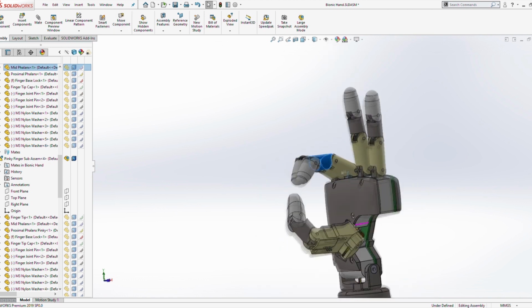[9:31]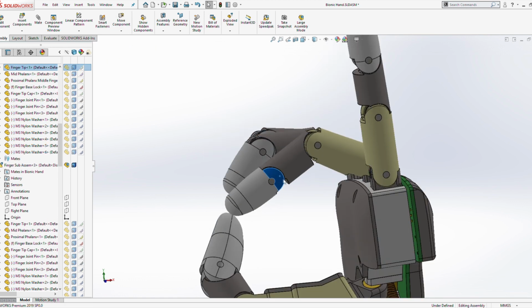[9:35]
You might be wondering what the need of these sensors is in the first place, and it's a good question. In order to precisely control the position of the fingers, we need to be able to control the rotation of the motor. It's not really possible to control the motor's exact rotational position just by controlling the current through it, unless we have some form of feedback telling us exactly where we are in space. So these sensors provide rotational sensing of the motor shaft, and hence allow us to implement fine control through the software of the fingertip motion and also their final position. It also ensures that we properly keep track of the finger positioning. For example, if we hold onto an object, the software can ensure that we are indeed holding onto that object and we're not going to let go of it unless that's the intent of the user.
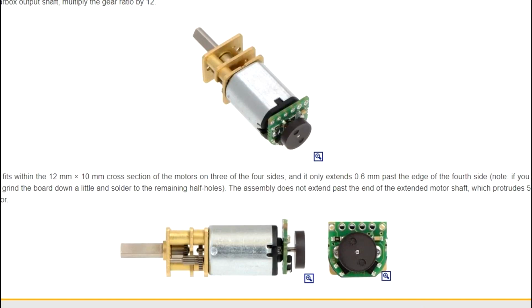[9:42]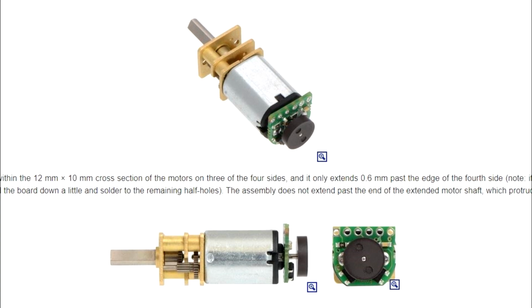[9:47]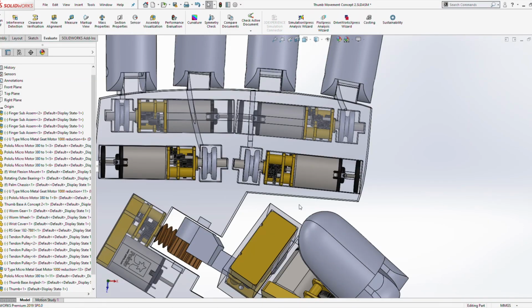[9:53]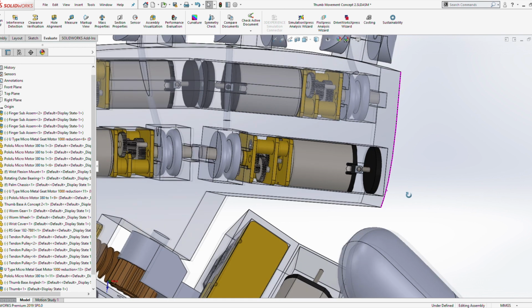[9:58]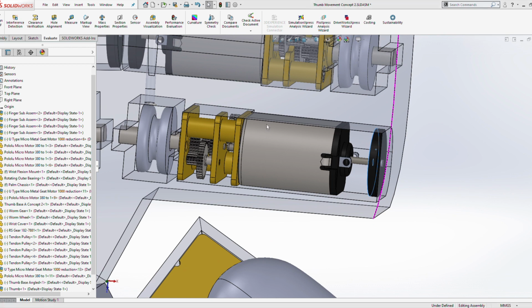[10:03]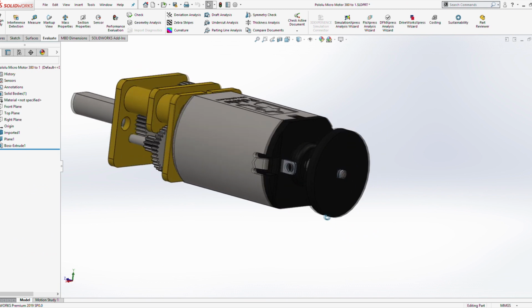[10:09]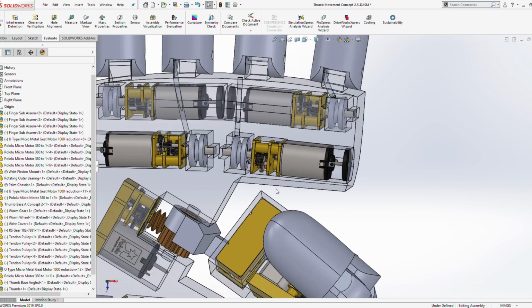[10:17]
I was initially looking at using magnetic Hall effect encoders on the output shaft of these motors to control their position. This is all well and good, but the problem with these encoders is that they're relative sensors. They only give a rotational position relative to the starting point. Now the problem with this is that if the system lost power or it was simply powered off, we lose track of where the fingers are in space, and this has many problems. It could be solved by storing the position in non-volatile memory, but that adds a layer of complexity to the overall software side and electronic side.
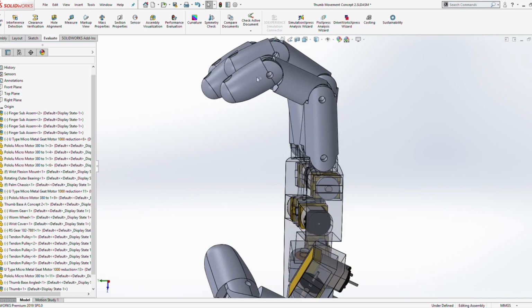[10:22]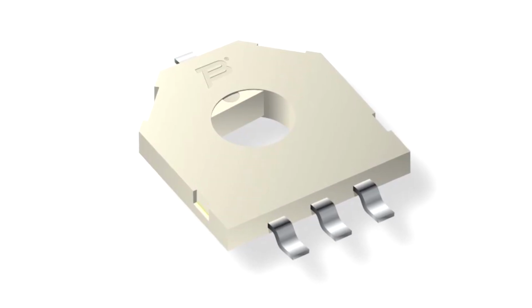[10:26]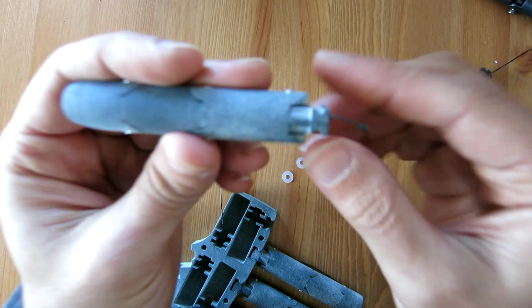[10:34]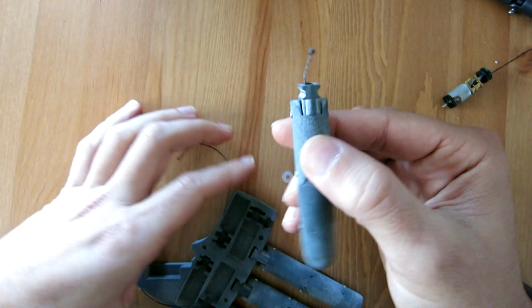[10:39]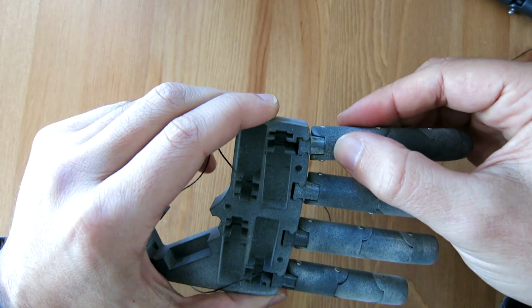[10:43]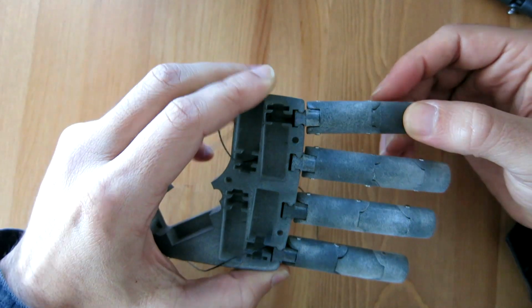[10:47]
So I decided it was a bit better to use the rotary potentiometers in this case. Unfortunately, I couldn't find ones with holes quite small enough to perfectly match the 3mm motor shafts, however. One more piece I've yet to mention is what would correspond to the knuckle piece. This piece has two semicircular grooves in it, and it's designed that way to slot into the palm piece.
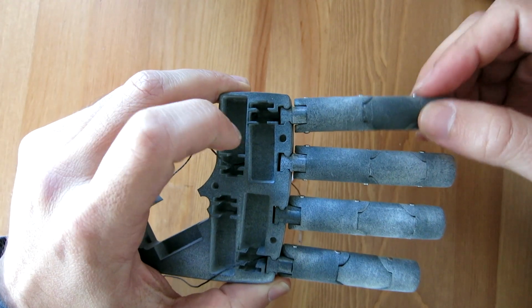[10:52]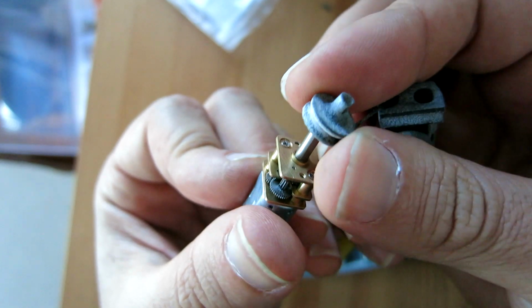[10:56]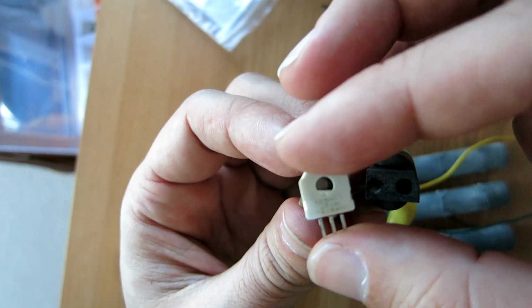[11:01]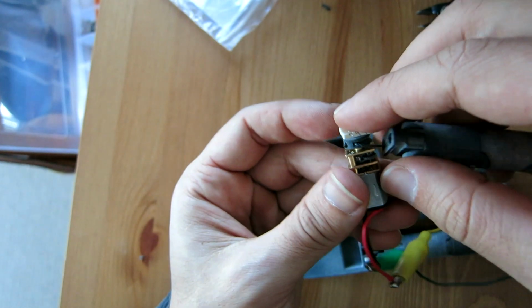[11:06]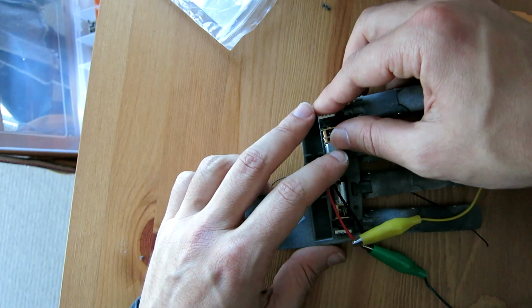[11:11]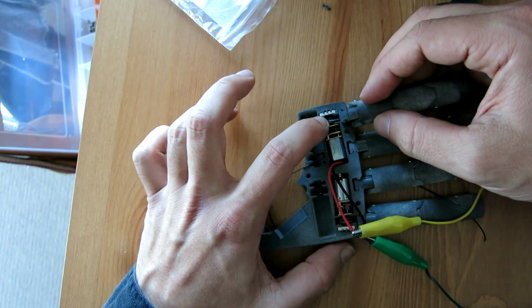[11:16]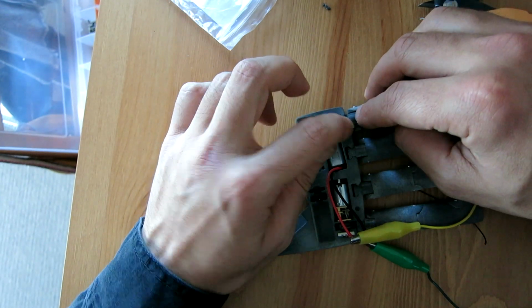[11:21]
I've done this because it simplifies assembly. It means I can assemble the complete finger in one go, including putting the tendons through, and I actually secure the elastic tendon in the knuckle piece because there's no reason for it to pass into the palm. And the driving tendon, the small rope, goes into the pulley, which goes onto the motor along with the sensor. So that whole subassembly I can then line up and push into their corresponding slots. Later on, I will use some additional plates on the back of the palm, as well as a custom PCB with the electronics to further secure everything in place.
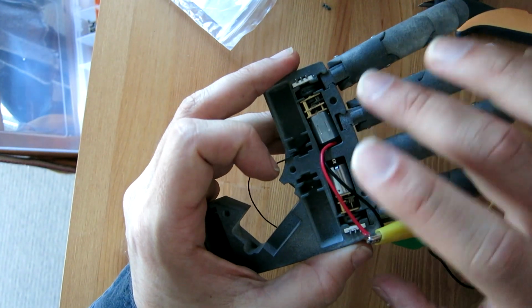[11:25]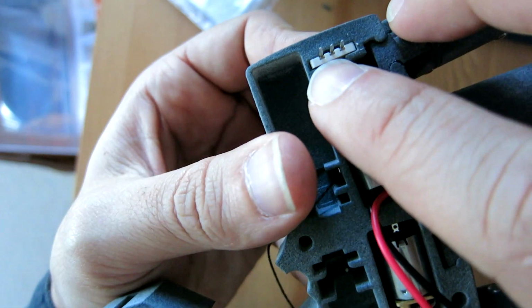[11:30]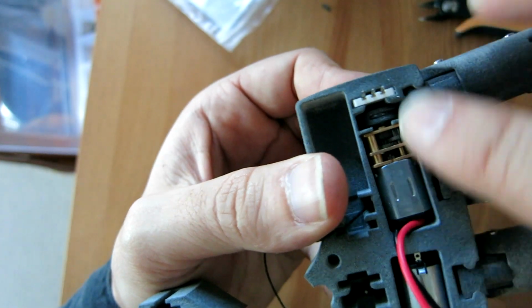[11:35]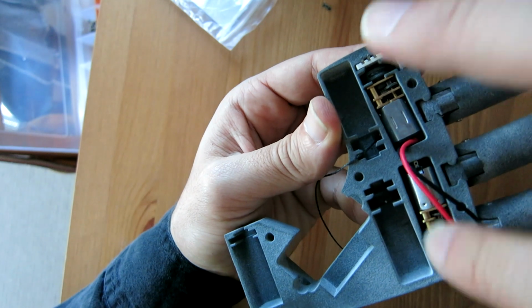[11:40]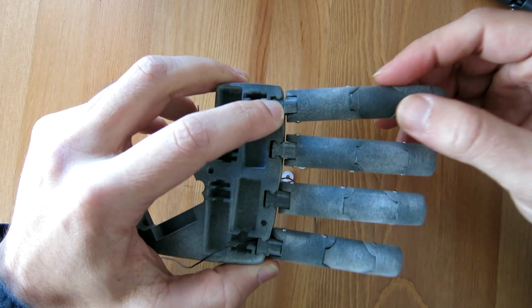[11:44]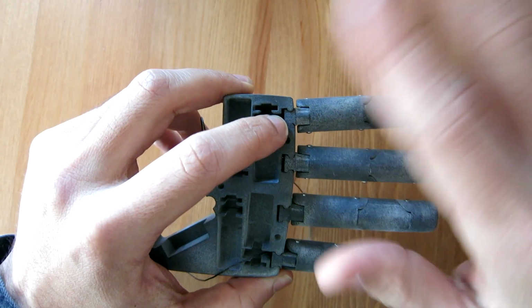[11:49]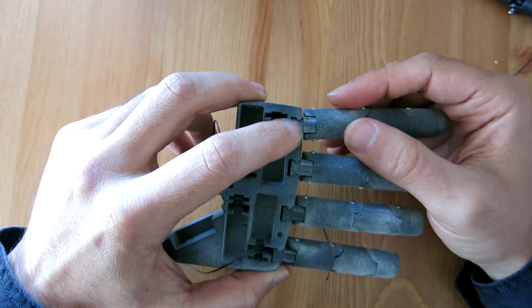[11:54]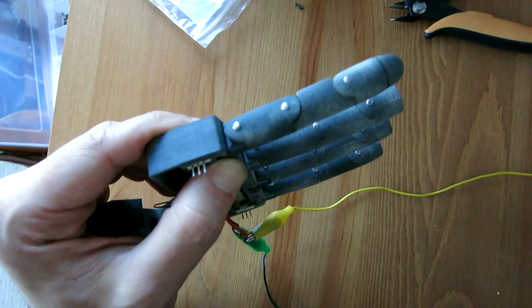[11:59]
I've also just soldered on some power leads to the terminals of the motor just for some quick testing, but in the future these wires will be much smaller and will solder directly to the custom PCB on the back. To me, having the knuckle piece slide into position was a nice solution to make it easier to assemble. There is a bit of unwanted play in there, but that's just because the powder printer was a bit more accurate than I anticipated, so the tolerancing was a bit loose, but that's an easy fix in the future. So the only thing left to do was test it out.
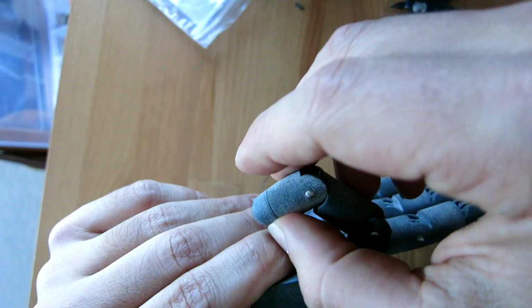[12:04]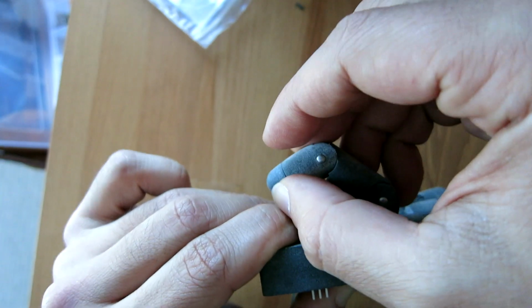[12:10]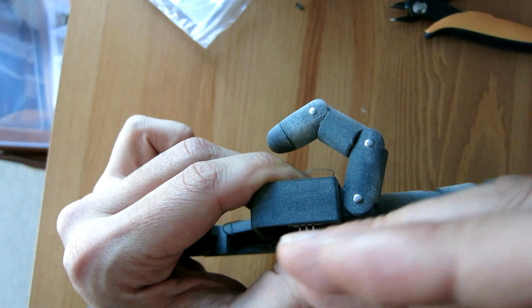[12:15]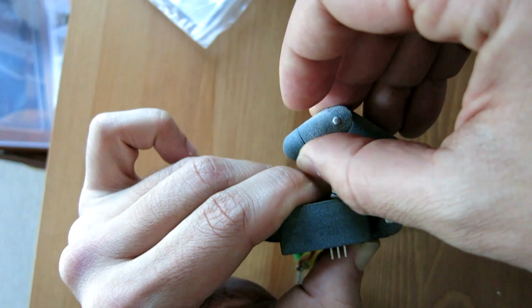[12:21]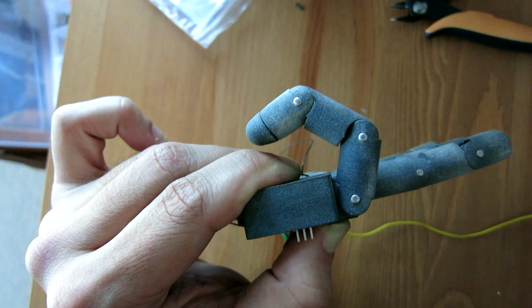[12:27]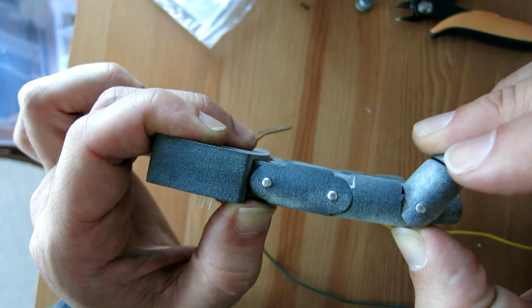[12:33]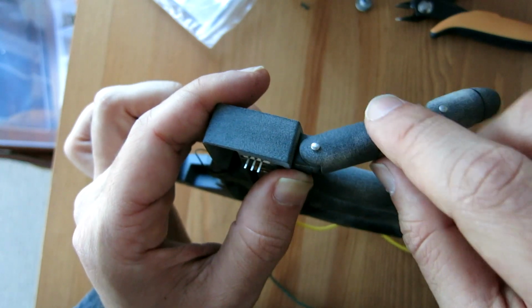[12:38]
In this position, the motor is still on, so it's actually stalling, which isn't good practice. You should always limit the maximum amount of current through the motor, but that is the finger in the fully closed or fully flexed position, and it did actually feel quite strong in that position. It was difficult for me to open it up with my fingers. I actually couldn't. Even when I powered off the motor, there was still some retaining force from the stiction and friction in the motor. And when I did try to force the finger open to rotate the motor in the opposite direction, it damaged the pulley.
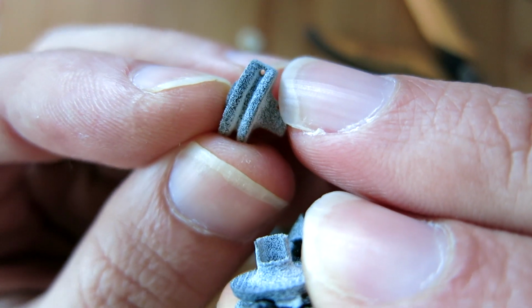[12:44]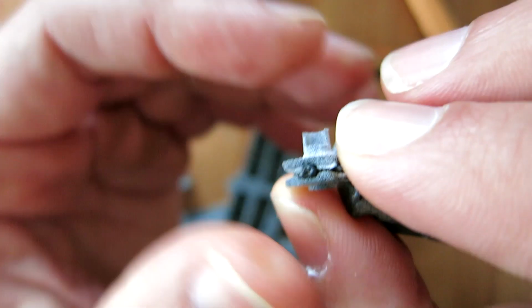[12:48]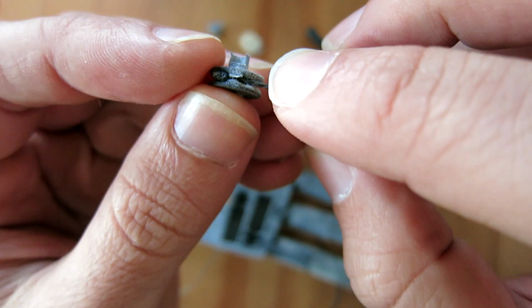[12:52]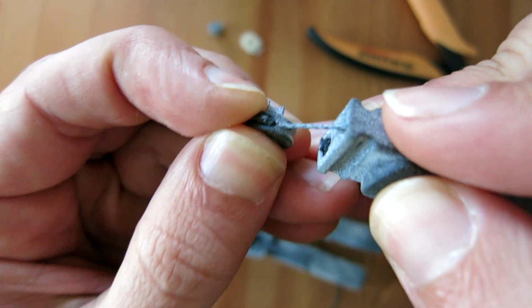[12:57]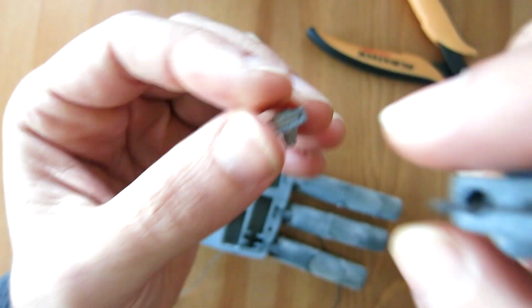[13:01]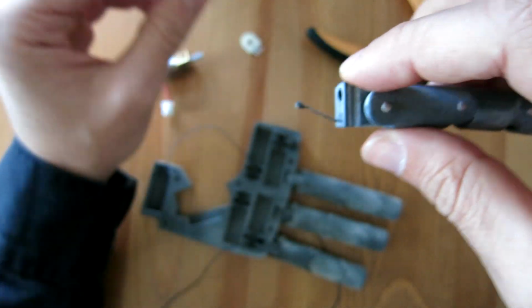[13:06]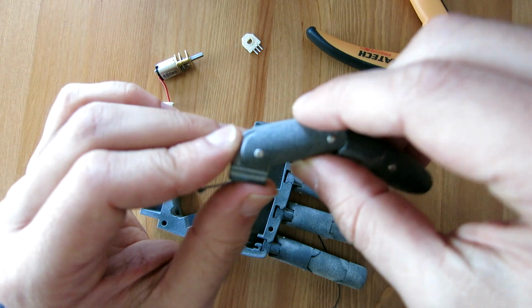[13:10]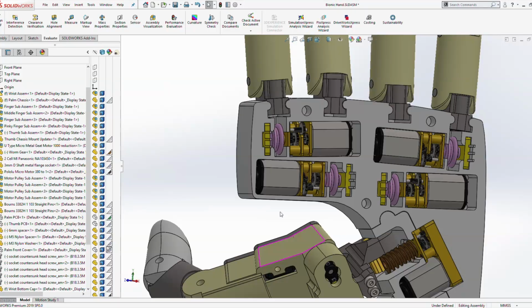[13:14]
So I'll just show you that here. Because the surrounding material around the already small hole going through the pulley is quite minimal, when there was a large torque being applied by the motor, the knot was pulling on that surrounding material with a significant amount of force. And after a certain point, the material was just sheared, the knot pulled straight through the material. So it's a bit of a design error by me. I haven't designed these pulleys to withstand enough torque that they may be subject to, and I'm planning on fixing that in the very near future.
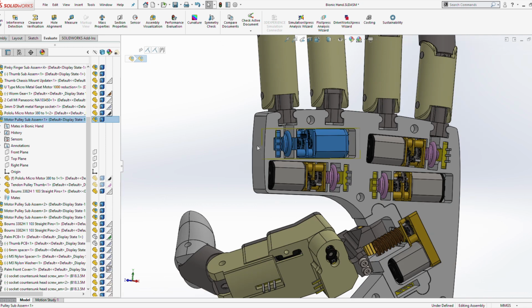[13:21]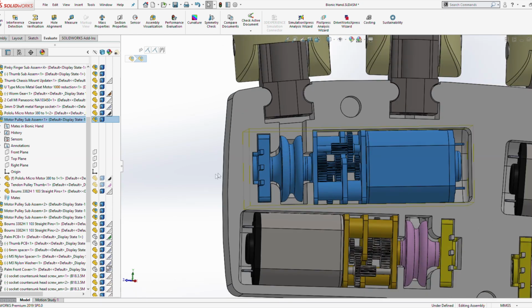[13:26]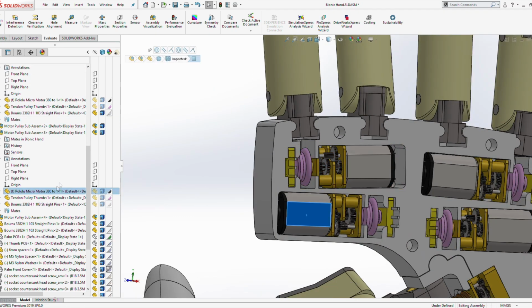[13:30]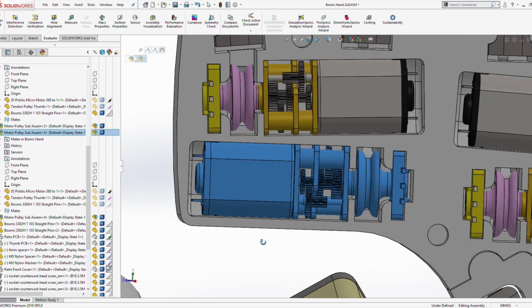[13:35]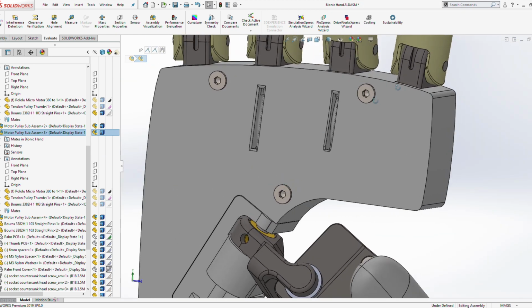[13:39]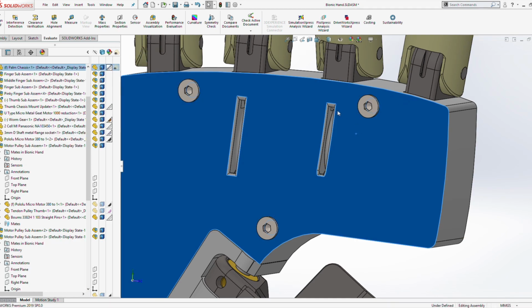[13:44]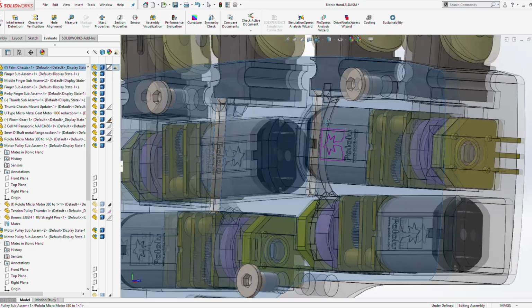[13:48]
One final design point to discuss is just the positioning of all four motors driving the index, middle, ring, and pinky finger. Two of them for the index and pinky position are positioned exactly how I've demonstrated in this video, and the other two are positioned slightly just below them. And in that case, the tendons obviously can't run straight through the other motors, so the tendons run through slots on the front of the palm. And I will have some covers covering everything up to make it neat and more secure in the future,
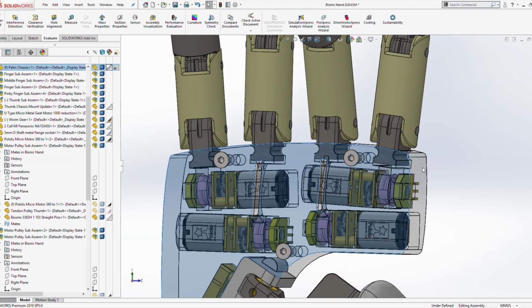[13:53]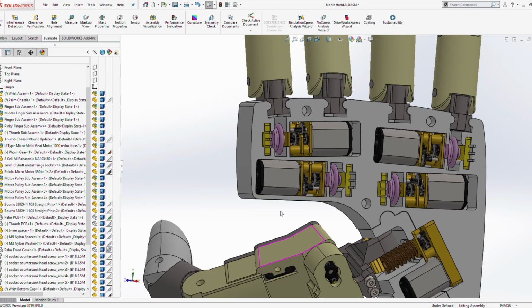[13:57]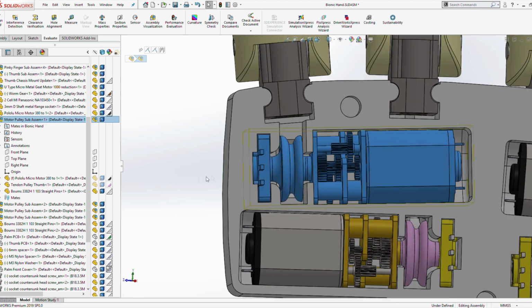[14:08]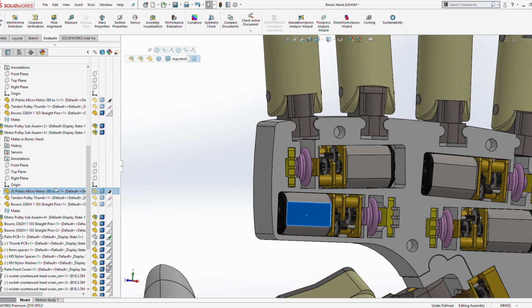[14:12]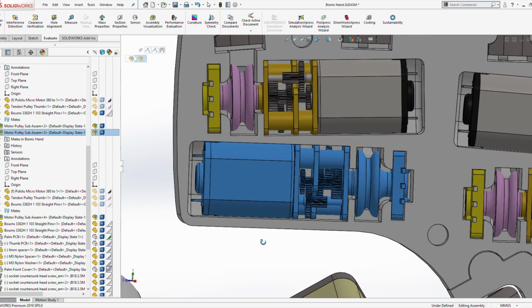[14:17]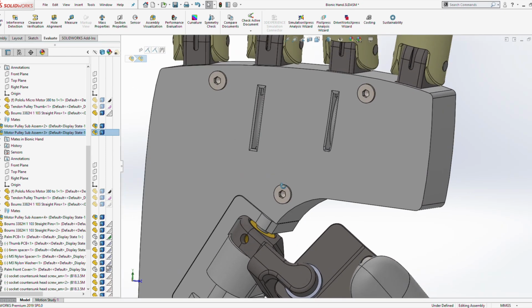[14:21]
so stay tuned for that. I would also like to mention that this design isn't really going for a significant gripping force. I think the gripping force will be quite adequate, but the overall aim is to make a compact bionic hand whilst fitting as many degrees of freedom in there to make it dexterous. But really, the additional degrees of freedom are applicable to the thumb and the wrist, which I plan to talk about in my next video. And following that, I will discuss the software and electronic side.
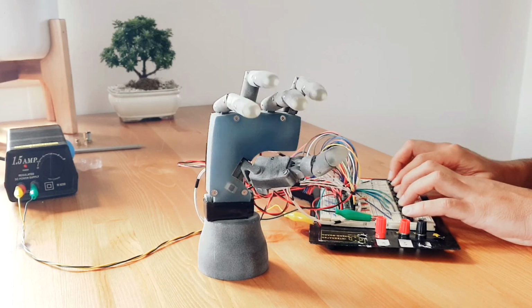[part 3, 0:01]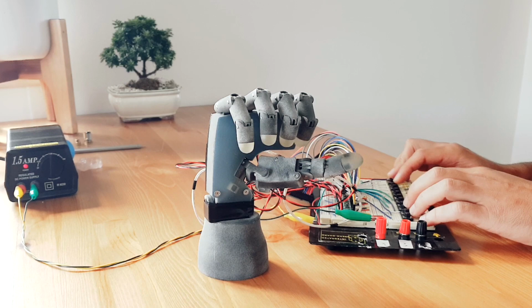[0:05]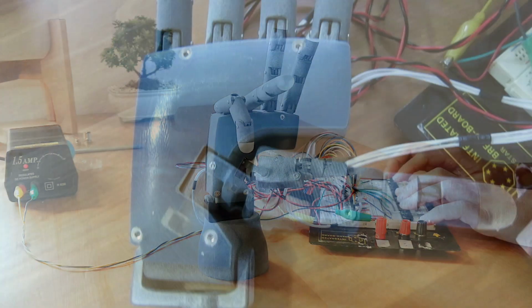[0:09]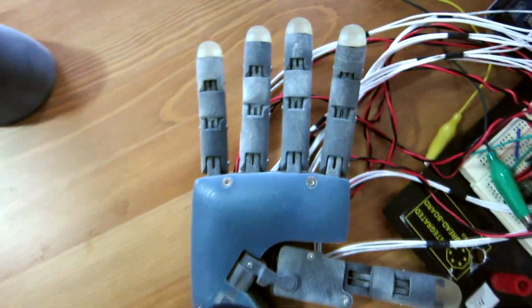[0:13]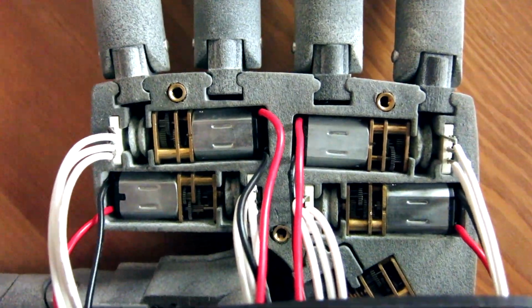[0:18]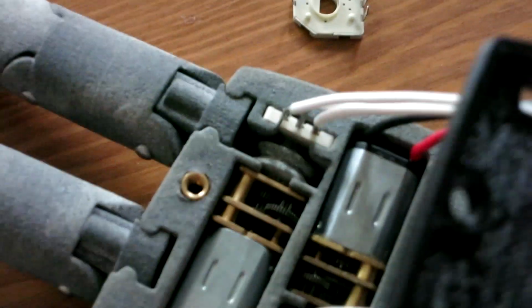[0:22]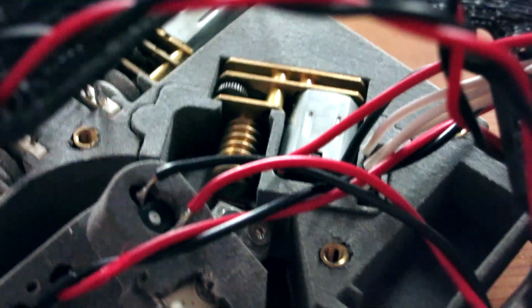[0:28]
I'm working on. So far I have four fingers fitted with motors which drive pulleys to actuate each finger. Micro rotary potentiometers are also mounted to each motor shaft to allow for position control. I have also fitted the thumb with three motors, providing 3 degrees of freedom.
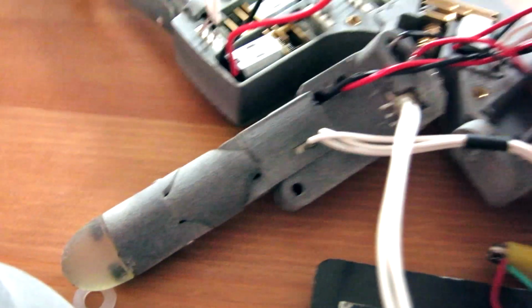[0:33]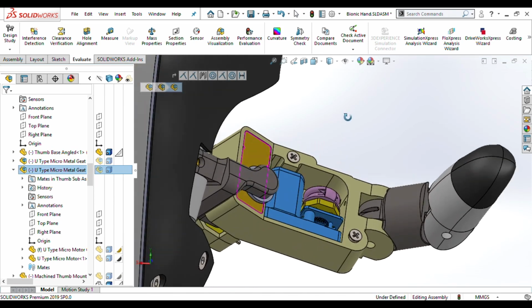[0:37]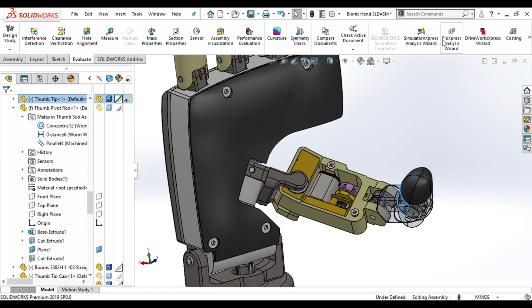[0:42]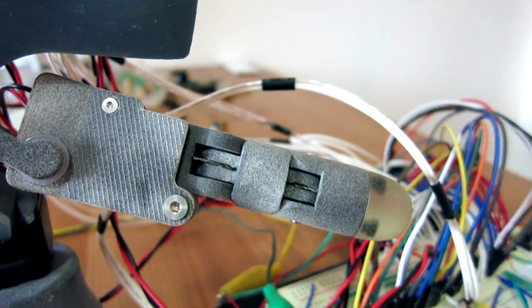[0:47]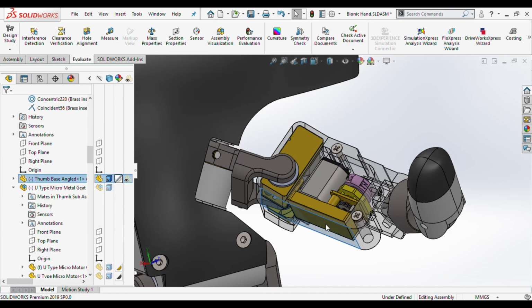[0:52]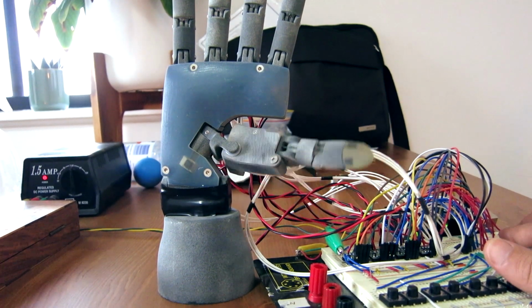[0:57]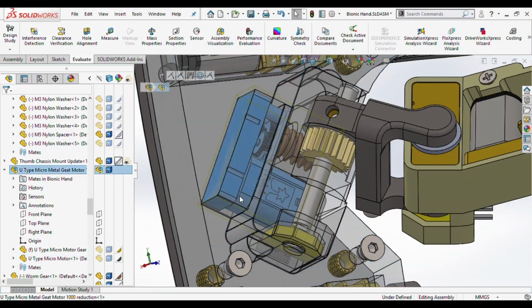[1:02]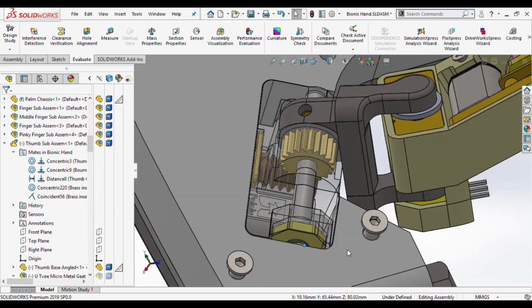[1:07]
The first motor in the thumb drives a pulley with a tendon connected to it to actuate the phalanges, much the same way as the fingers in the previous video. A U-type micromotor also allows for a pivoting motion at the base of the thumb, providing the second degree of freedom. And finally, the third motor is again a U-type, which drives a worm gear to rotate the whole thumb subassembly relative to the palm.
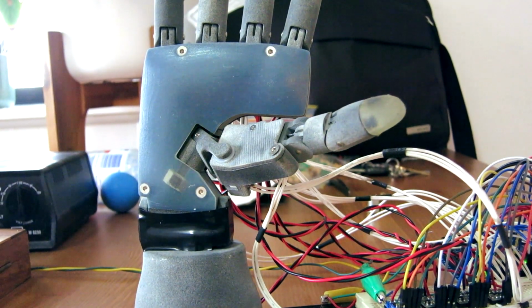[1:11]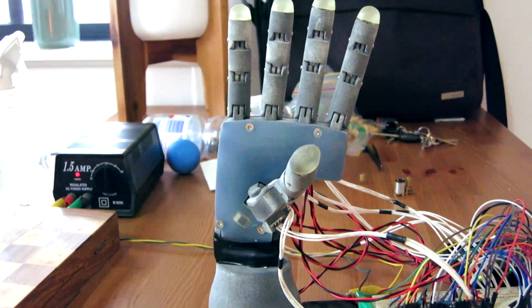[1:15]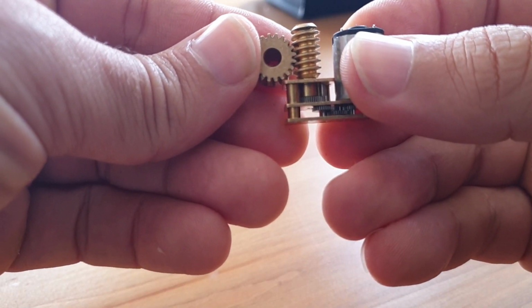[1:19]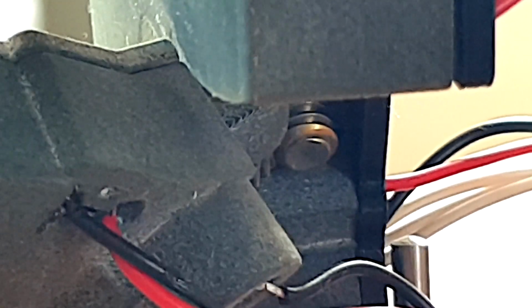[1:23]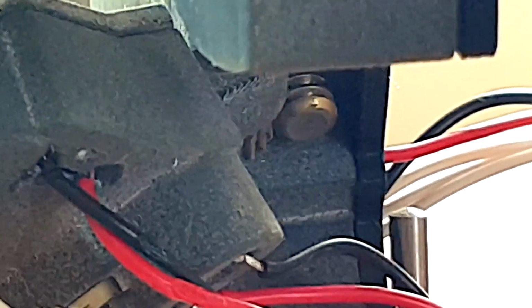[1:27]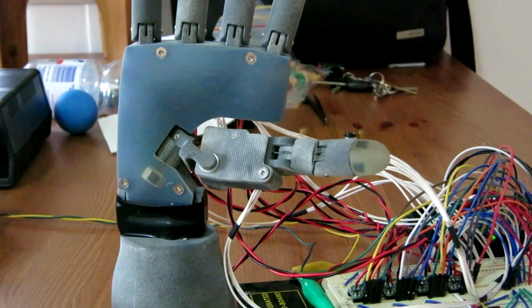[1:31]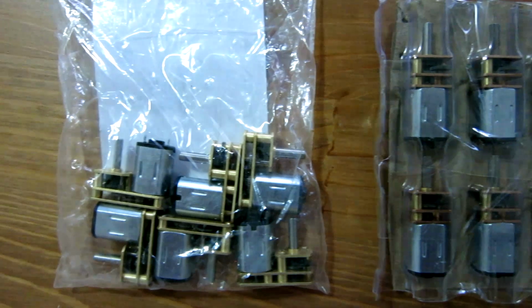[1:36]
The worm gear coupling to the spur gear decreases the output speed by a factor of 20. And unfortunately, the U-type motors I have on hand have a fairly high gearbox ratio, which means a slow rotation speed. So this opening and closing of the thumb is quite slow at the moment. But I've ordered more of these motors with a higher output speed, so this will be an easy fix in the future.
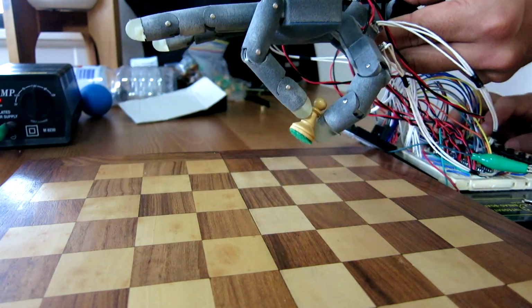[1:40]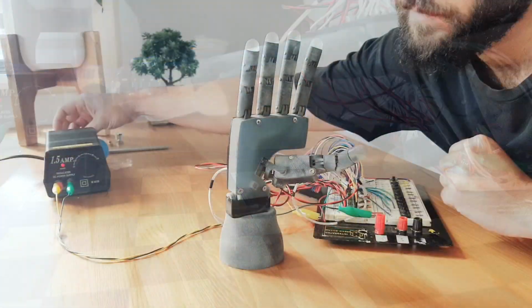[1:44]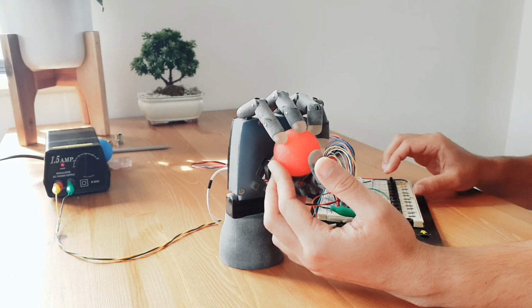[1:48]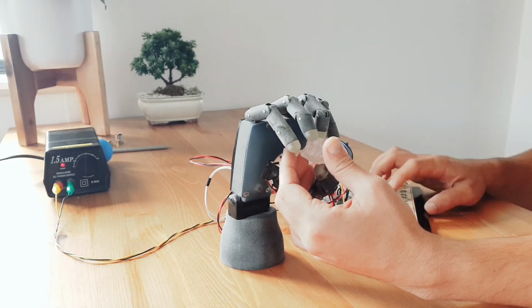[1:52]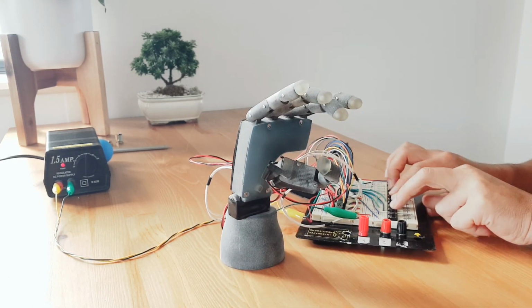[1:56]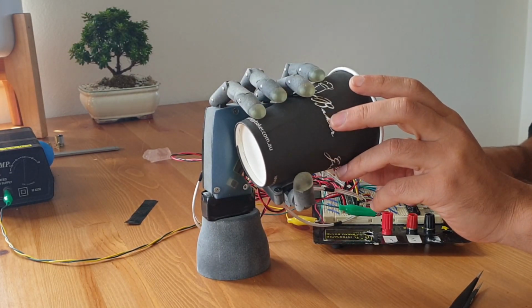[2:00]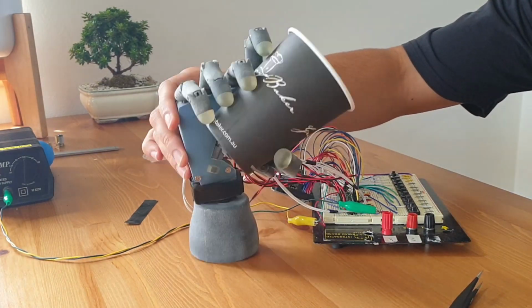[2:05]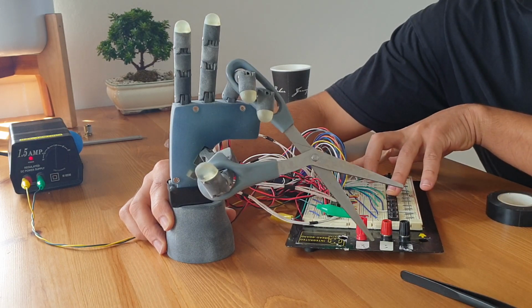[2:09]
Essentially at this stage, I'm evaluating the actuated motions of the device and finding small mechanical issues here and there to fix. I'm also experimenting with different grip patterns and seeing what's possible. The device can quite reliably grasp onto large objects. However, manipulating smaller objects is naturally more difficult. I even experimented with trying to operate a pair of scissors with the hand, and I'll talk about this more in a bit.
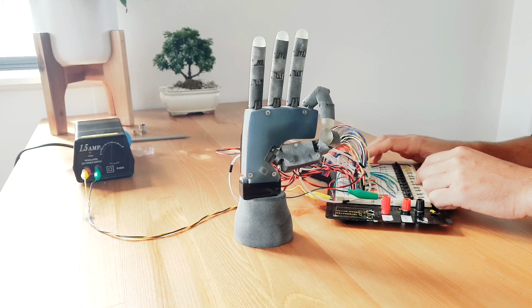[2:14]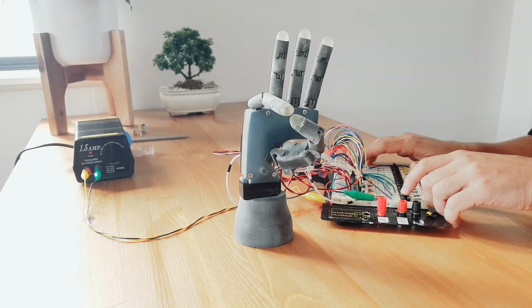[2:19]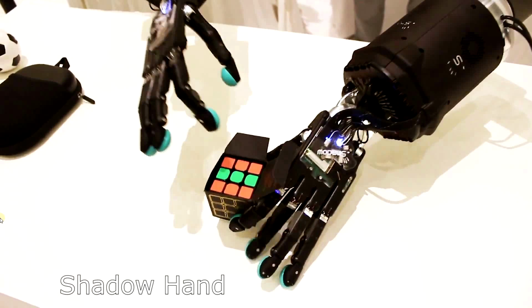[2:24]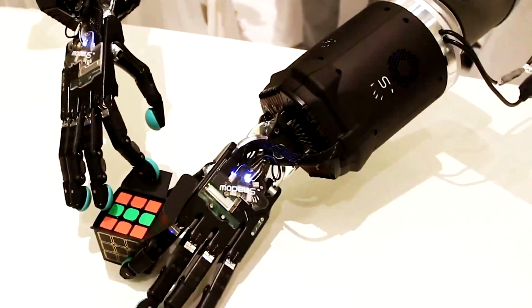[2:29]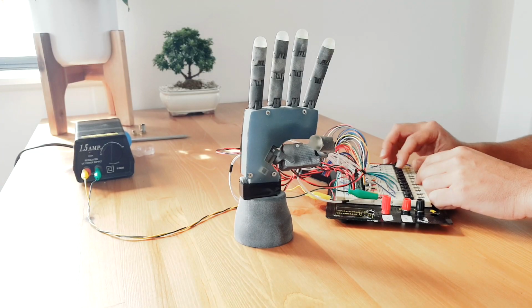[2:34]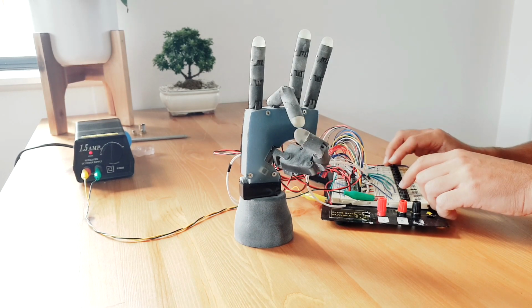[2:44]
The unit is able to touch each finger with the thumb, which provides provisions for more advanced functionality of such a hand fitted to an amputee. This is only really seen in cutting-edge advanced designs, which aren't really suitable as prosthetic hands, either because they're very bulky or they're very expensive research devices. I've sped up this video to show the thumb tip moving to each fingertip. This was a big goal I wanted to achieve when I first started thinking about this project. So it's pretty cool to see it working now in the physical world, or at least as an early prototype.
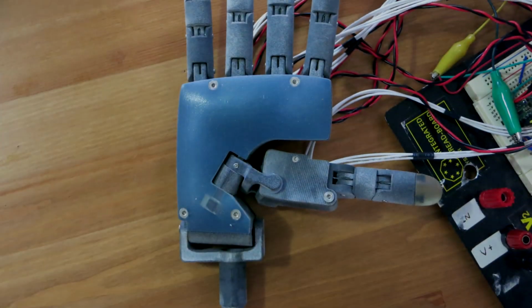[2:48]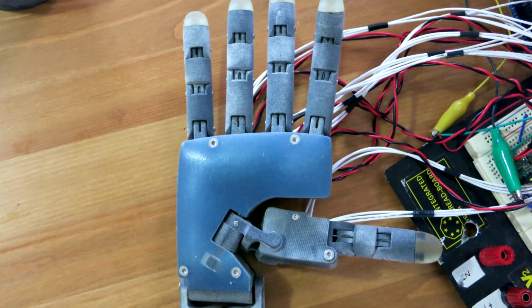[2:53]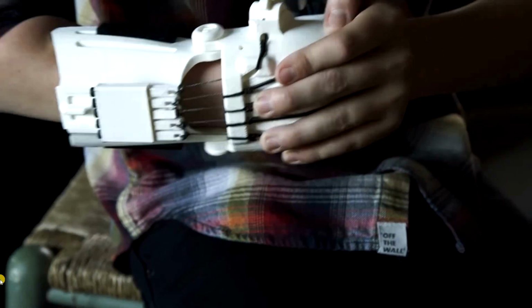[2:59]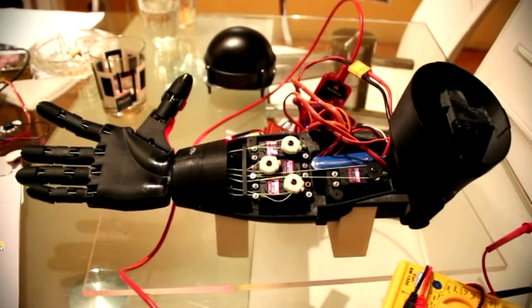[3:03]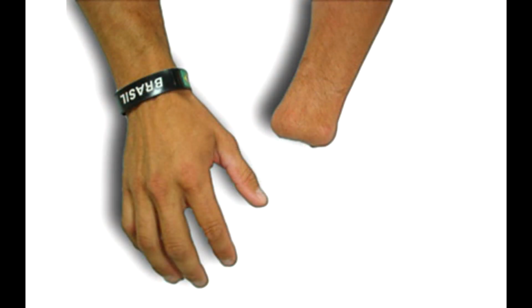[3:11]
The dream is that this hand could be an affordable prosthetic hand which provides more dexterity than other commercially available devices. The compact nature would also hopefully allow people who have only lost their hand to utilize it. Many myoelectric prosthetic arms tend to house electronics and batteries in the forearm, which make them unsuitable for a person who has lost their hand but still has their forearm.
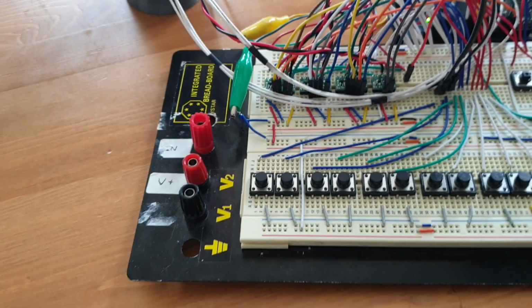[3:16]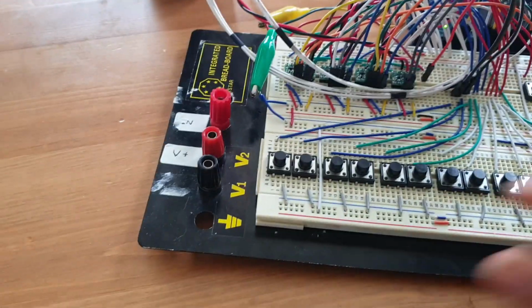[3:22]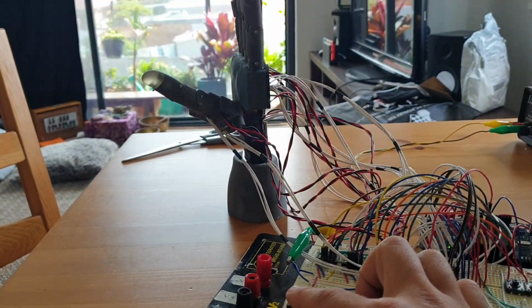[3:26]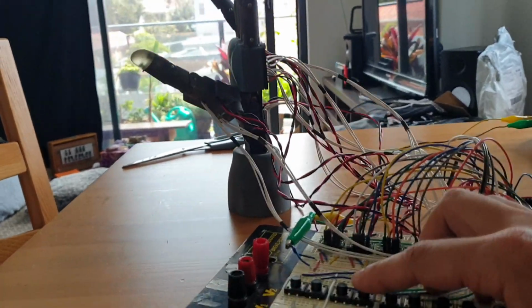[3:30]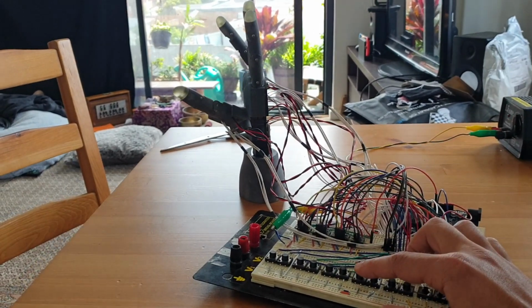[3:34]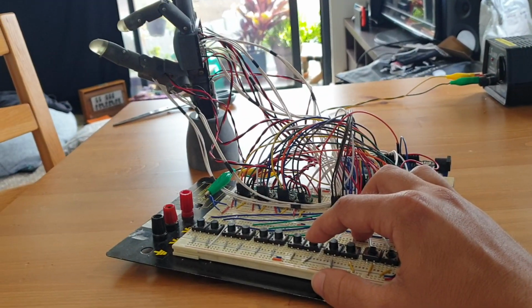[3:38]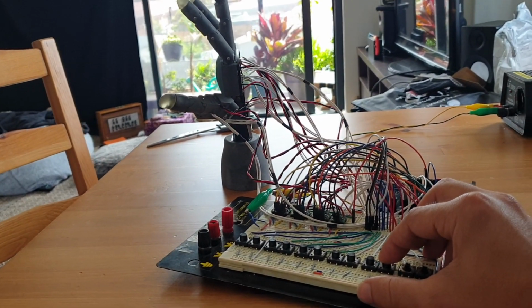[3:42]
As to be expected, the control of this device is pretty difficult. For this early testing phase, I have numerous momentary push buttons. I have two buttons for each motor. Each one actuates either the forwards or reverse direction. Actuating one motor at a time and using visual feedback to adjust positioning is painfully slow. And in reality, an amputee obviously wouldn't be able to operate so many buttons to control the device.
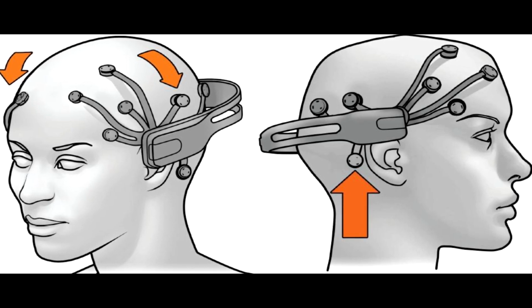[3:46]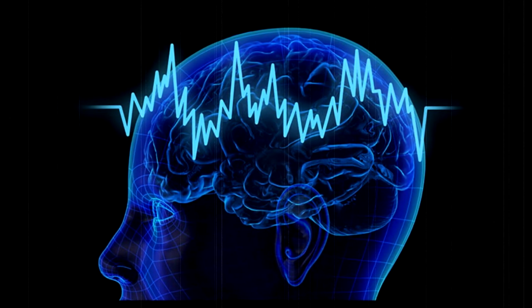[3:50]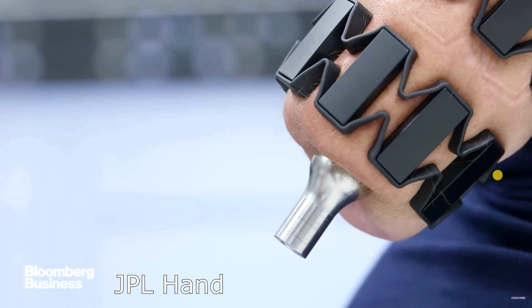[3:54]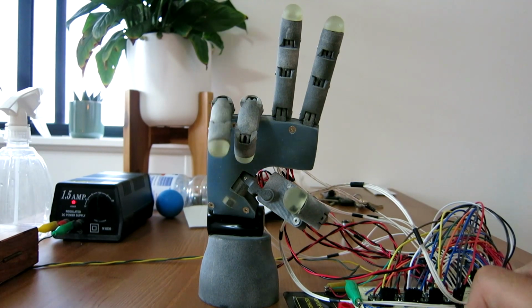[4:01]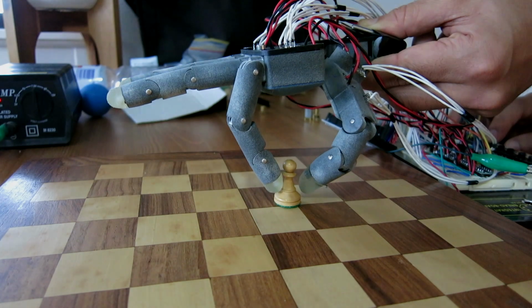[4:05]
The plan is to try to use an EEG headset and train the user to activate various grip patterns with their intentions, or in other words, with their thoughts. A single EMG channel could then be attached to their upper arm muscles, which would activate this pre-selected grip pattern, and the motors would drive to their required positions. I'll discuss this more in future videos.
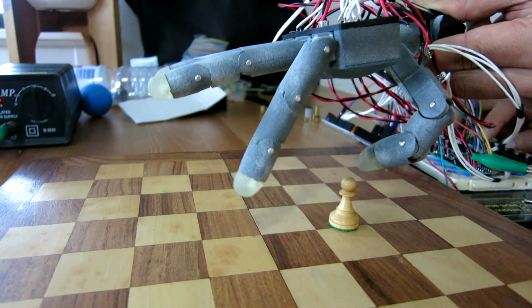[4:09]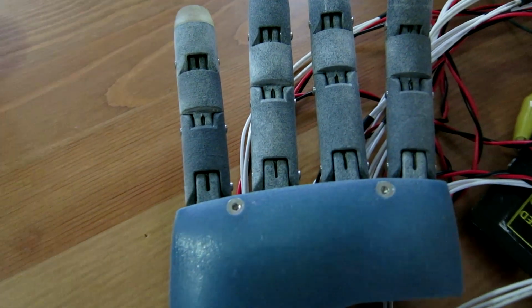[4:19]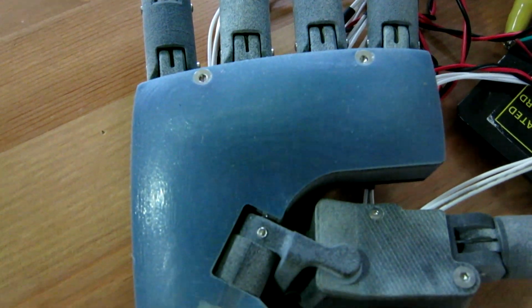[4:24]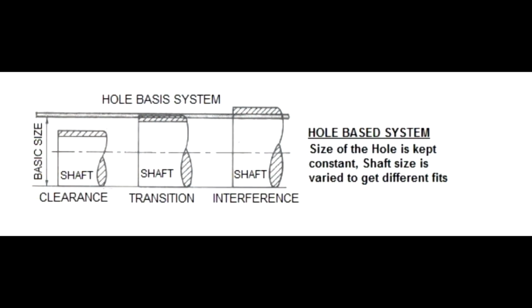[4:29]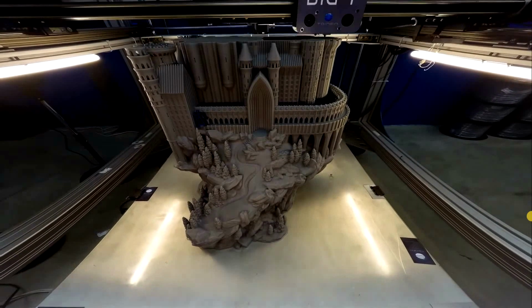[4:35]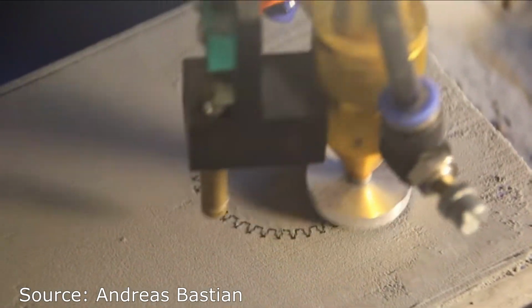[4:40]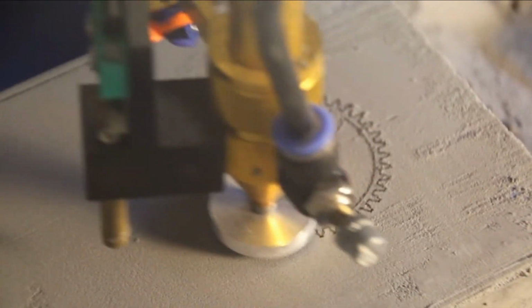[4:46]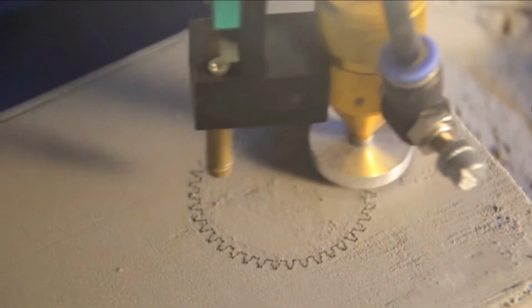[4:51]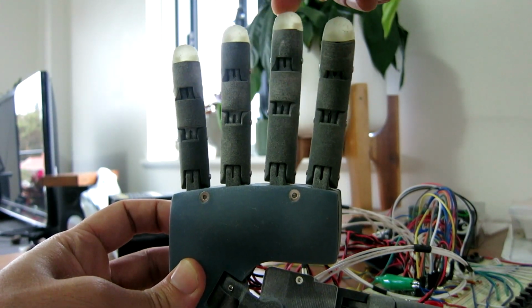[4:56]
Some more immediate issues with the device are the numerous small errors with the mechanical design. In many cases, the clearance I designed in was too large. Clearance is essentially micro gaps designed between mechanical parts to ensure they fit together nicely. In my case, I was designing with standard FDM printing accuracy in mind. However, SLS printing, which is what I'm using now, is far more dimensionally accurate. So instead of leaving clearances of about plus or minus 0.25 millimeters, I should have made it more like plus or minus 0.1 millimeters. Some examples of this include the fingers, which are a bit wobbly in their base.
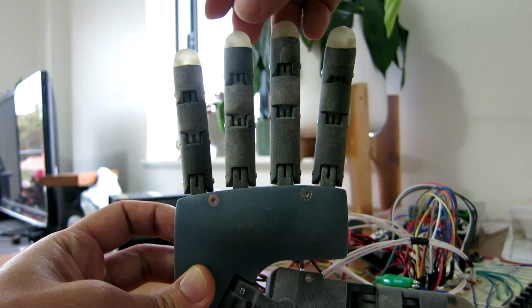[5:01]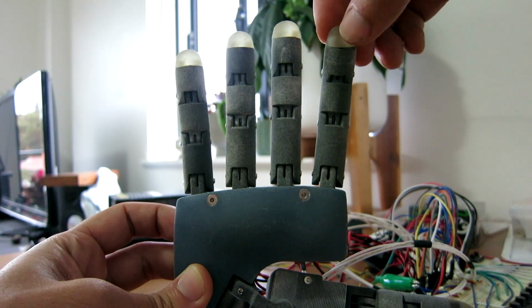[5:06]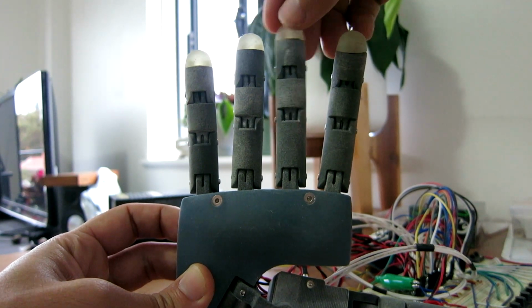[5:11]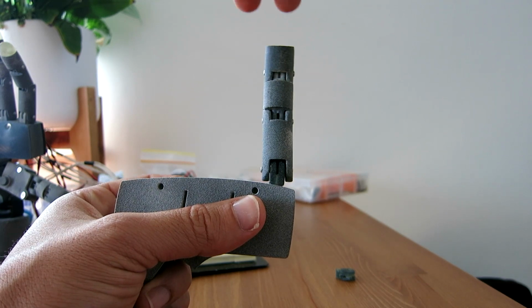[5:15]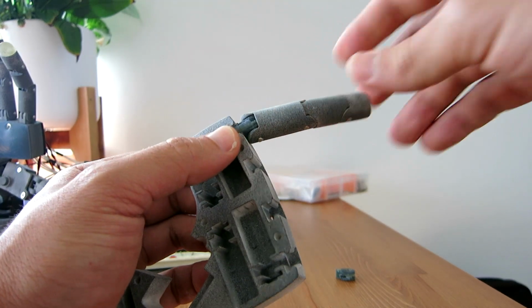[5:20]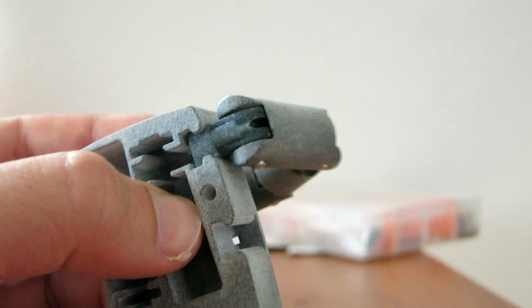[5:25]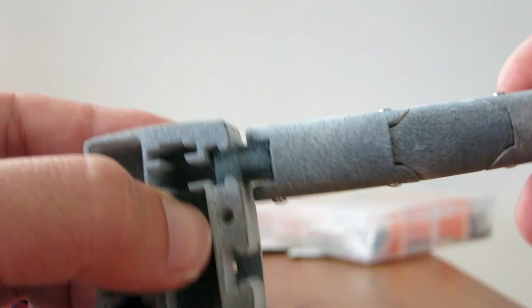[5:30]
This actually isn't necessarily all that bad, as a super rigid design is more likely to break under impact. It made me think of experimenting with printing the base locking parts, or what I call the knuckle parts, in a flexible material. The idea was that the flexibility would add some toughness to the fingers, meaning they could be knocked around a bit without breaking. Unfortunately, the parts I got printed were too soft and flexible for the application. I believe I went for a shore hardness of about 70 durometers, but found something more like 90 durometers would likely be better.
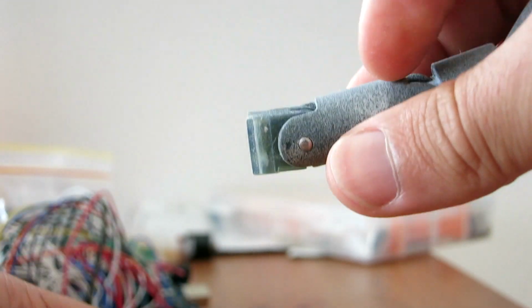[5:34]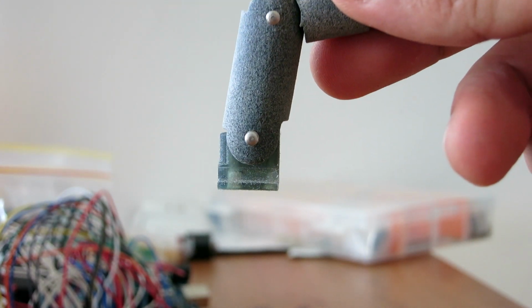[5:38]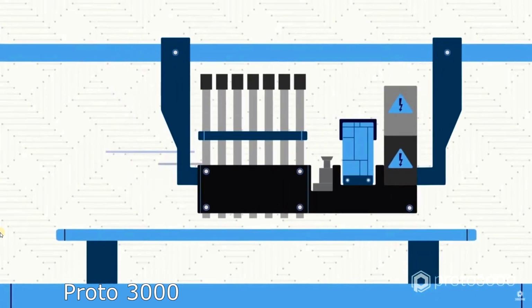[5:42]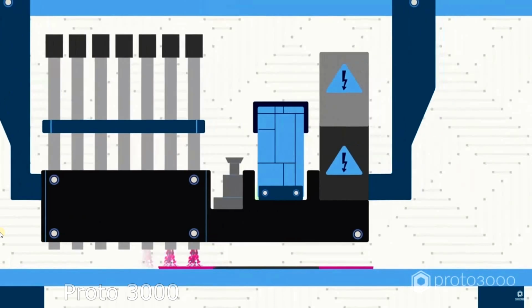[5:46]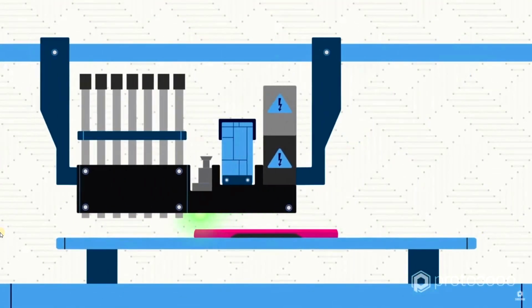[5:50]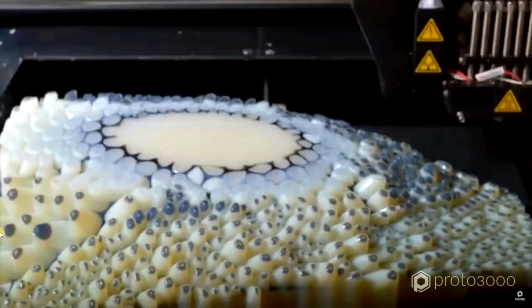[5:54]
And if you're wondering how the hell you 3D print flexible parts, well, these are actually done on advanced machines that use PolyJet technology. To the best of my understanding, the print head has two nozzles, one which extrudes a soft material and one which extrudes a hard one. The combination of these two materials can be controlled to give specific hardness values.
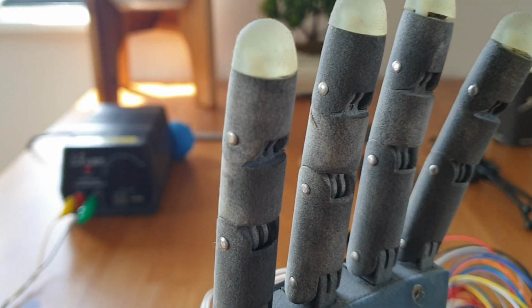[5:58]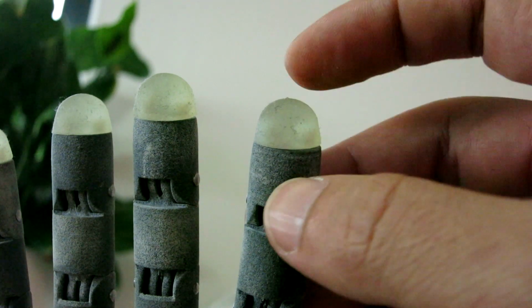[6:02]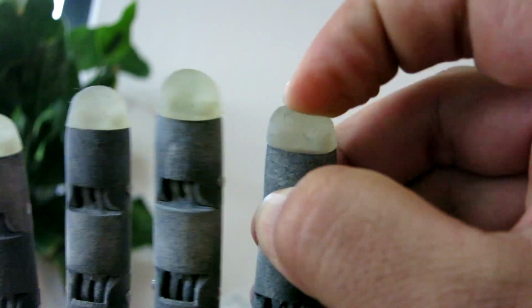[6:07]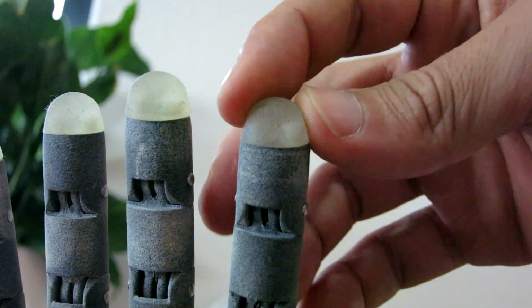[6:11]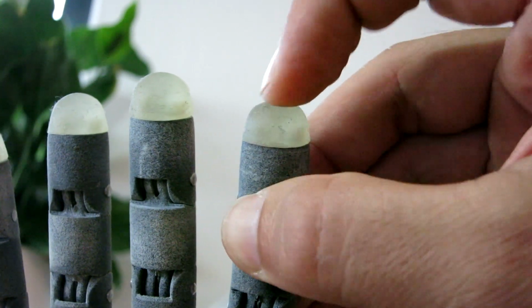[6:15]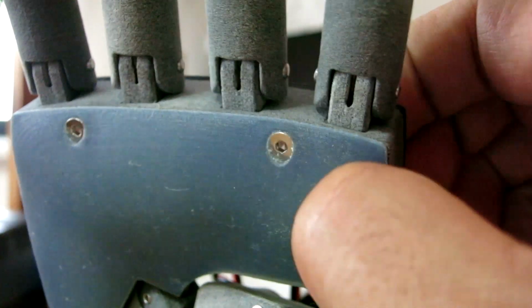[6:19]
Similarly to my SLS printed parts, I'm paying to get these PolyJet parts printed. You may have noticed that the fingertips are actually printed in a soft material too. This is to provide better grip and compliance when grasping objects. The geometry and attachment of these fingertips at the moment is definitely not perfect, but I have ideas to improve this in the future. I also did a similar thing for the palm cover, making it soft and flexible in order to hold onto objects better.
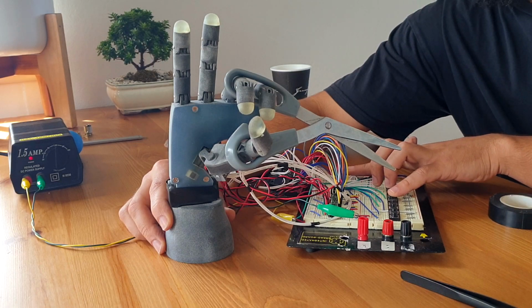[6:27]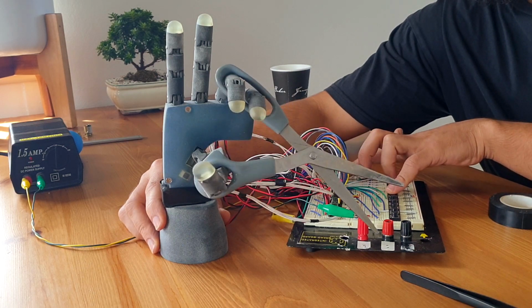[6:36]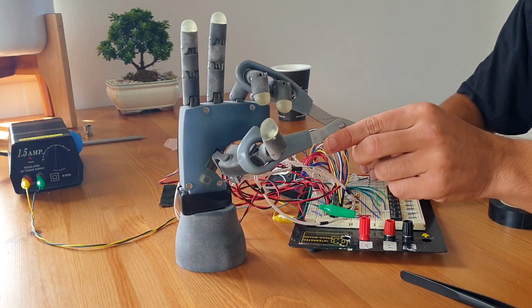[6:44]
Now back to testing. Unfortunately, as seen here, the fingers weren't quite strong enough to fully close these scissors. These scissors are a little bit stiff, but I was surprised the fingers couldn't close them because they felt kind of strong at first. It could very well be that the fingers aren't applying force in the correct direction to close the scissors, although it will be hard to address this because the fingers only have 1 degree of freedom.
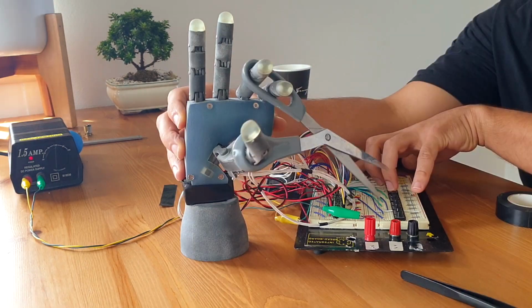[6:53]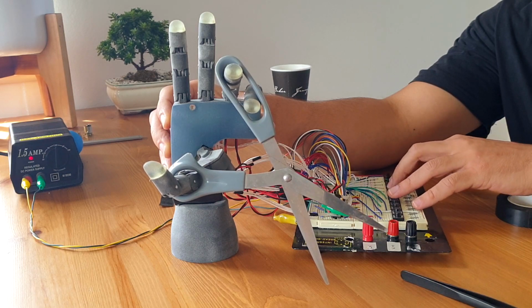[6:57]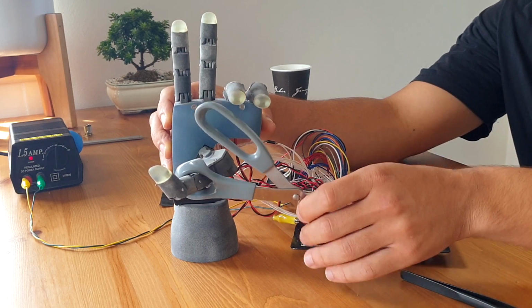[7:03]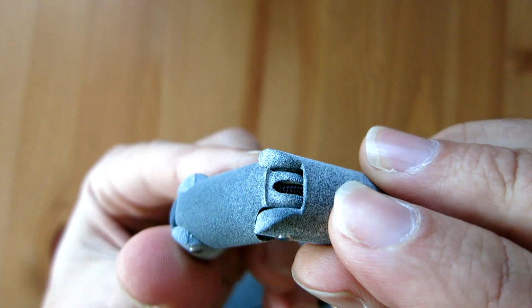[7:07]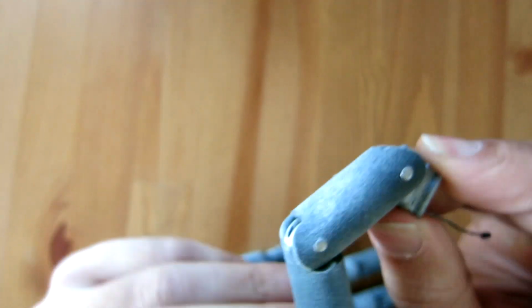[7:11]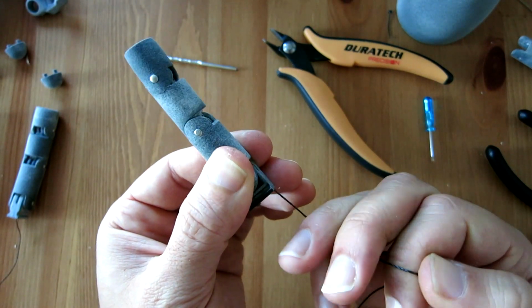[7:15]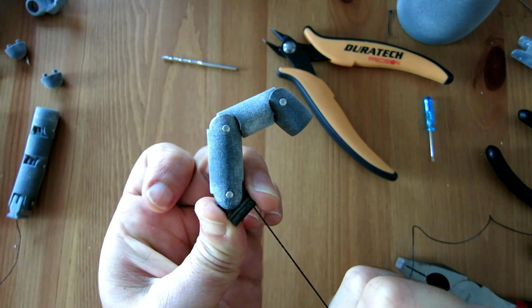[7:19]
I also noticed the importance of having decent force from the fingers in the extension direction. At first, I thought significant force was only necessary for flexion or closing the fingers to hold objects. But in the case of using a pair of scissors, you need some extension force to open them. I could make the elastic providing the extension force higher, but then that would increase the load the motors have to overcome, reducing the closing force. I'll have a good think about all of this and try to address it at least somewhat in the future.
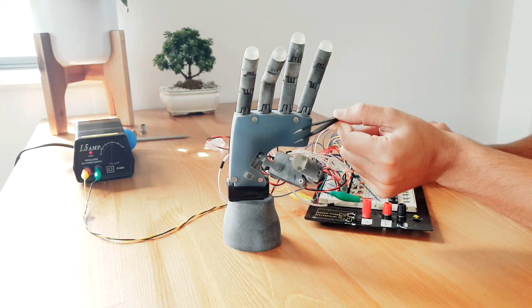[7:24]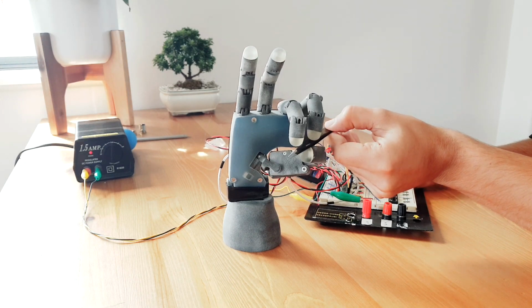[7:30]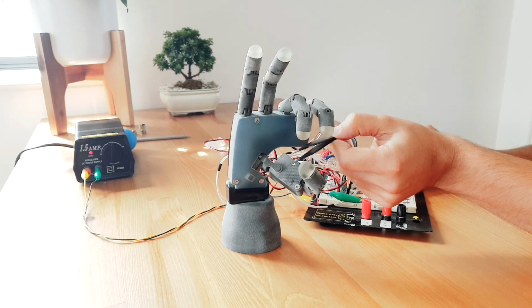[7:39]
I also tried and failed to operate a pair of tweezers. And speaking to my friend, he reminded me that when we're children, it takes a long time for us to learn how to use a pen and really to gain the dexterity in our hands. So I think at this stage, I'm not too disappointed with how things are looking, and there's definitely much room for improvement.
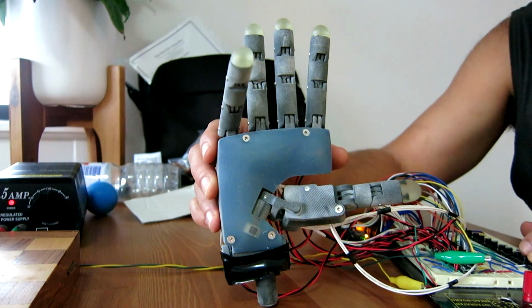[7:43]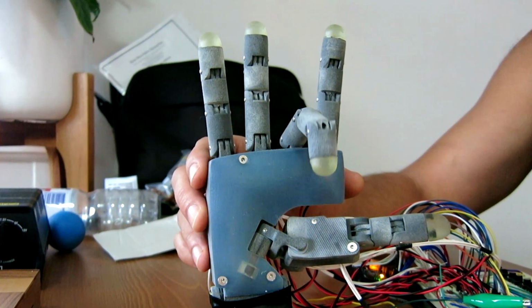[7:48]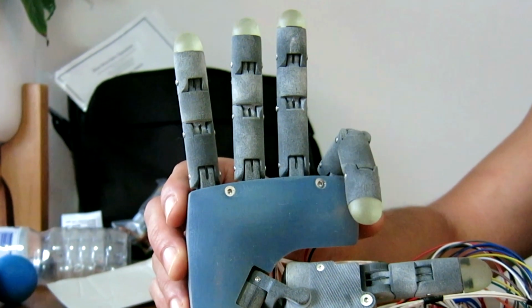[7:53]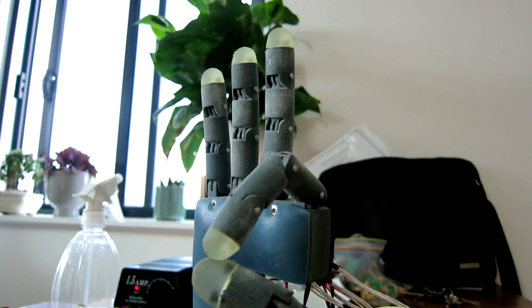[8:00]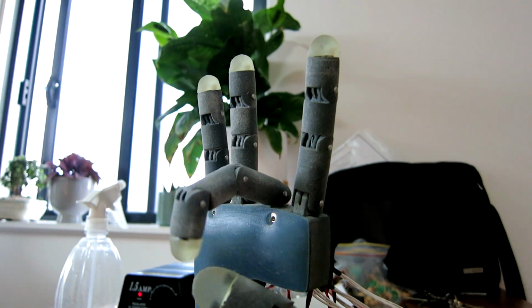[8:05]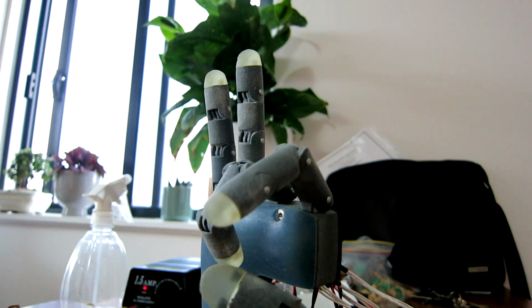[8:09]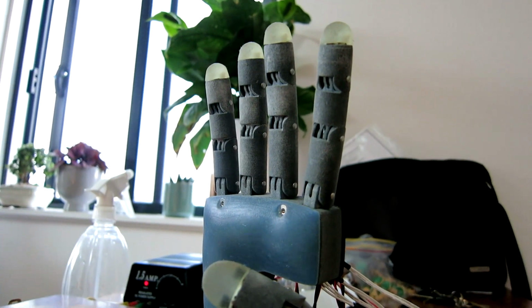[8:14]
I also unfortunately found that some of the motors were damaged in my testing so far. Specifically, the index finger motor seems to be driving a lot slower than it was at first. This may be because I was stalling the motor when trying to close the scissors, which caused the motor to overheat and be damaged. Although there could be some other mechanical issues going on inside with the attachment to the pulley and tendon, so I'll investigate this further. In the future, I plan to have more sophisticated software implemented as to not drive the motors at stall for very long or even at all.
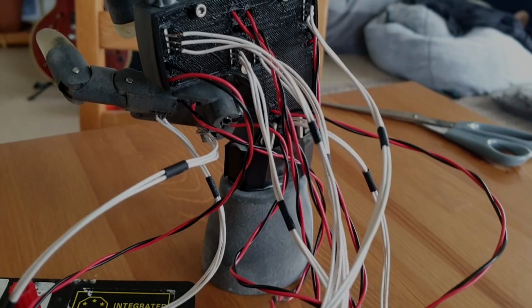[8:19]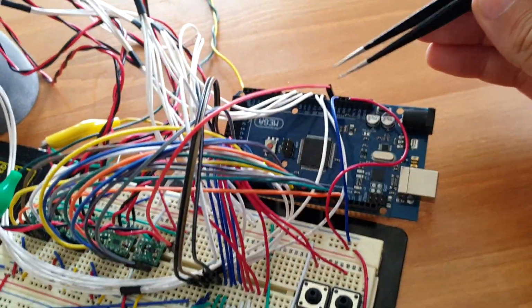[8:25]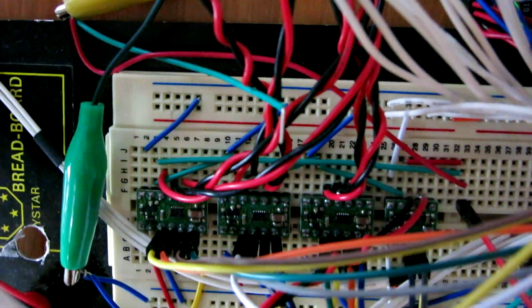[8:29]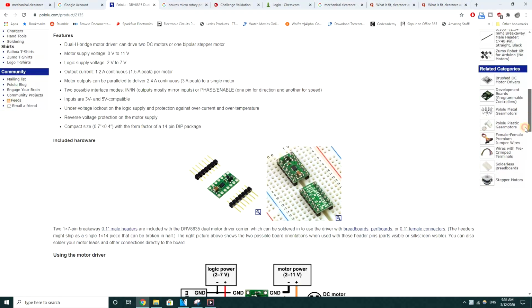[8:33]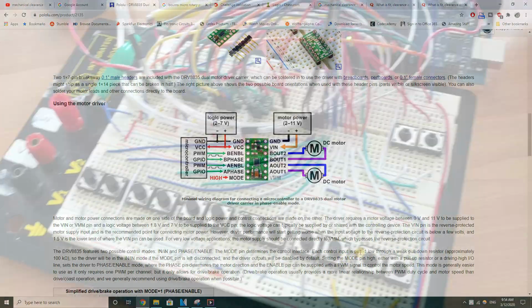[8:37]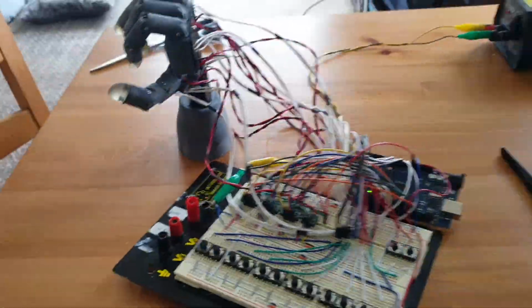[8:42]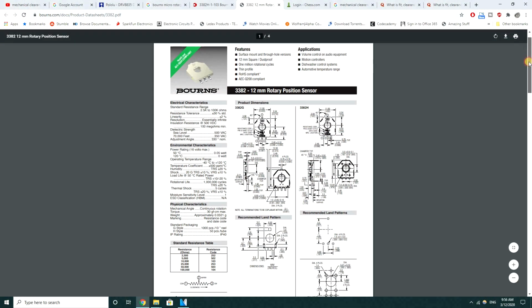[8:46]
And that leads into the next point of discussion, the electronics and software. At the moment, I'm using an Arduino Mega to send PWM signals to micro motor control boards from Pololu. Essentially, these boards contain H bridges which allow for speed control of motors in forwards and reverse directions. I'm reading two momentary push buttons for each motor, one to actuate each direction, and I'm also reading a micro rotary potentiometer for each motor.
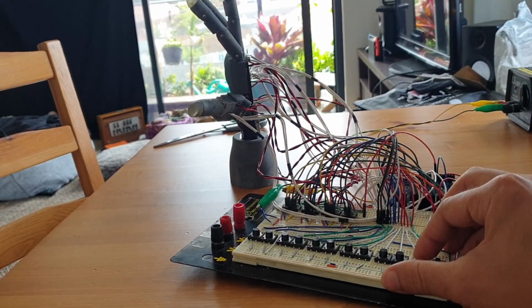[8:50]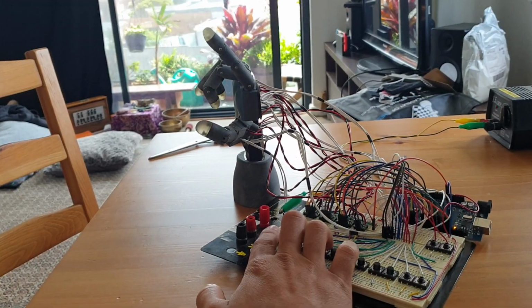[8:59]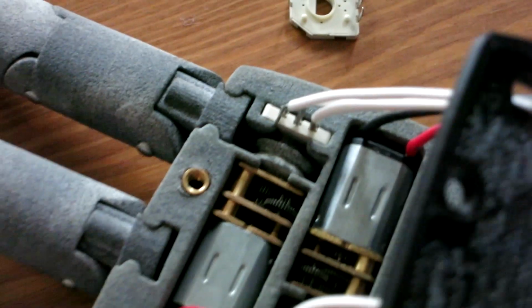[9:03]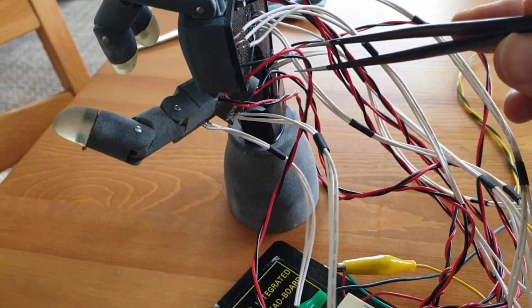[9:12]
These potentiometers are fed into the analog to digital converter of the microcontroller and provide a value that varies with rotary position. They will allow for position control in the future, which will be essential for driving the motors to specific positions for a certain grip pattern. I have quite a few things to say about these potentiometers, but I think I'll leave that for a future video. As you can see, so far I'm doing the electronics prototyping on a couple of breadboards.
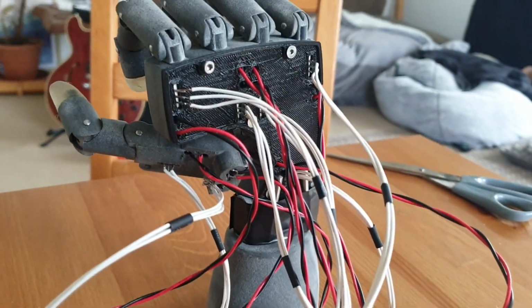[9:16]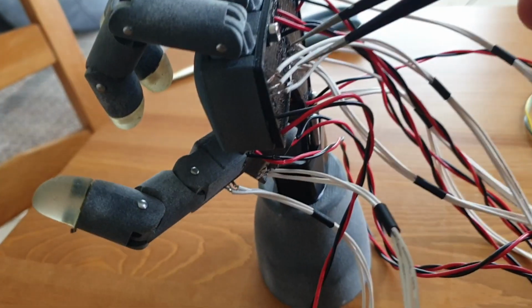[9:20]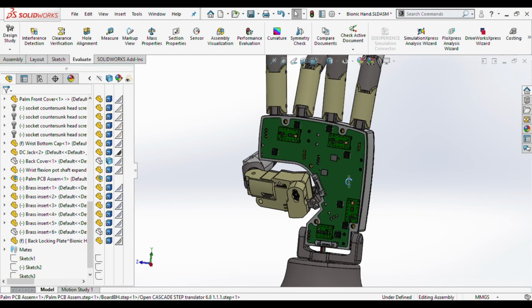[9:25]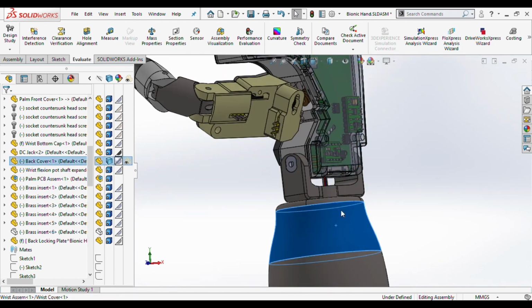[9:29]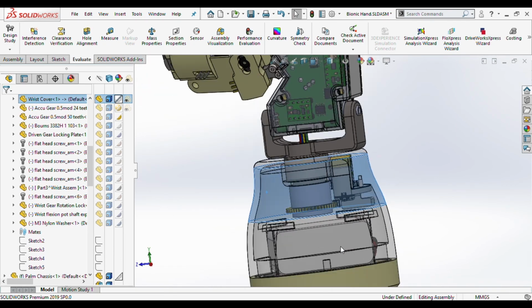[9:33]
I tried my best to keep things neat, but the nature of breadboards tends to lead to a big mess of cables. The next step, I think, is to make a custom PCB which will contain the electronics and mount to the back of the palm. The battery to power this will be housed in the wrist section, and while I'm at it, I'll add in the two motors for the wrist.
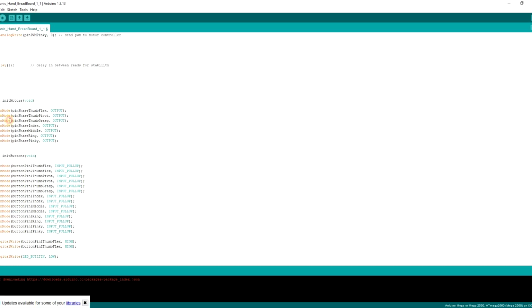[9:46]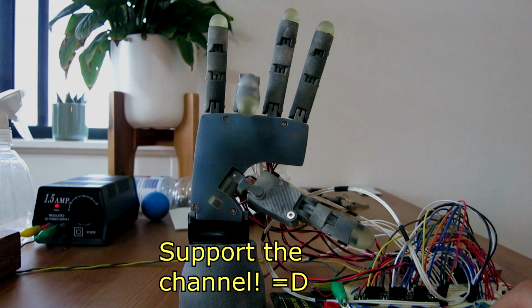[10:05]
The software running this at the moment isn't anything special. I've used some hash defines for different motor speeds, and I've made variables for the PWM signals and activation pins of each motor. After initializing the motor outputs and momentary push button inputs, I check which push buttons have been pressed and either drive the motor forwards, backwards, or command it to stop. I'll probably try to implement the motors as objects in the future. There's still quite a bit to be done on the software side. And that's all I have for you at the moment.